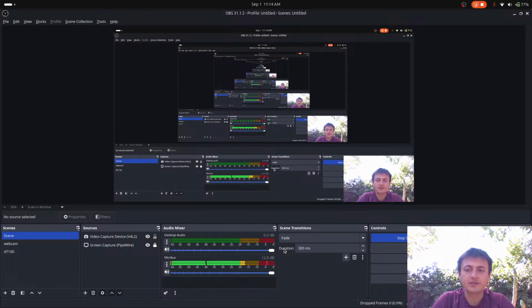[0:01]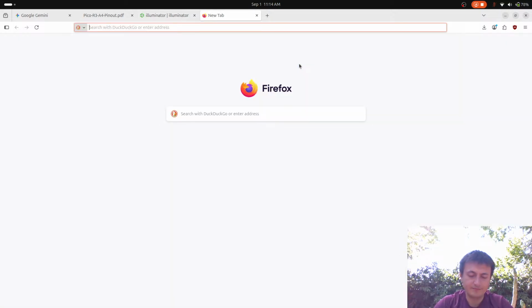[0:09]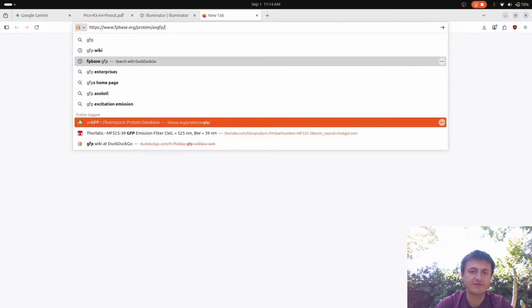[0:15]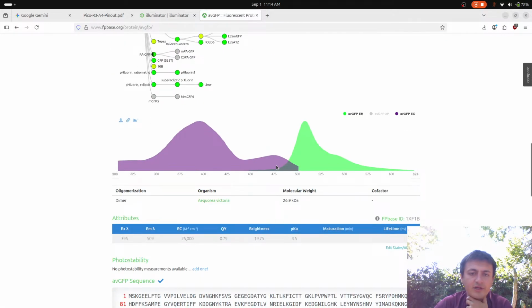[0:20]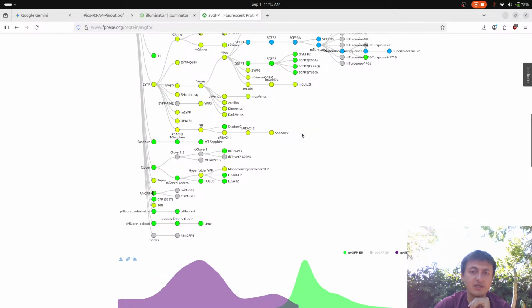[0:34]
All right, good morning. So, we are continuing on with the project of building a device that will cause, basically, to start from the beginning, there is a protein called GFP, specifically AVGFP. Now, this protein has the interesting property that if you shine a light in this band, this wavelength, it will fluoresce in this spectra. And so this is really cool, and you can basically put the gene for this protein into a plasmid, and you can put that plasmid into a cell, and it will start producing the protein.
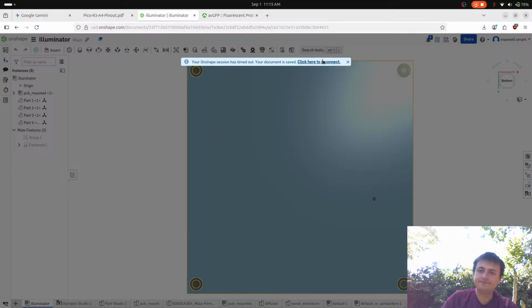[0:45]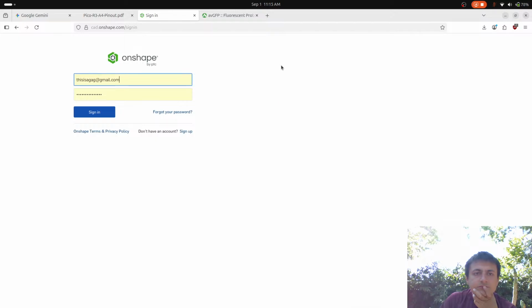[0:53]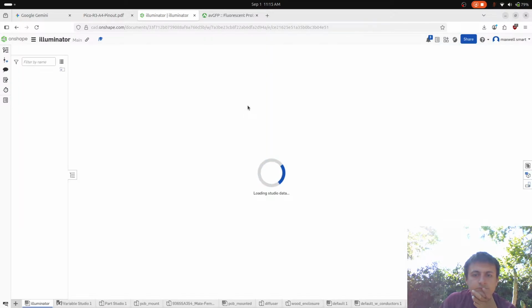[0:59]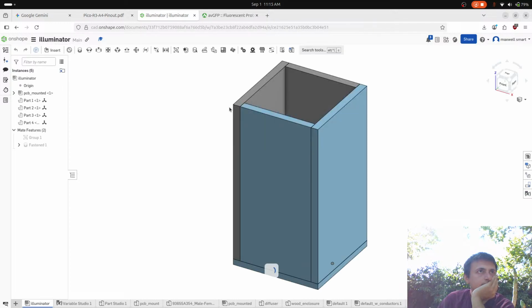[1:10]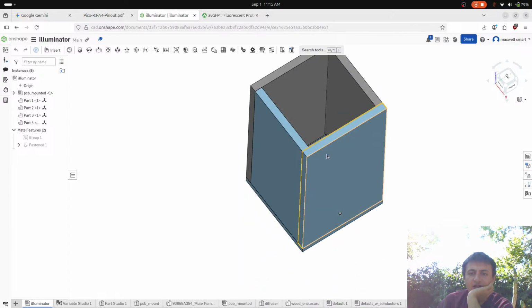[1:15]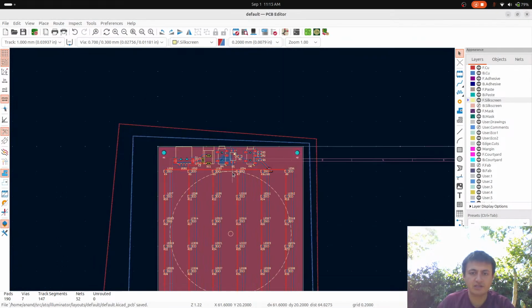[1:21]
Now, the goal of this project, and here's the CAD, and we're going to have to make some modifications to the CAD. And we're going to have to design a new part anyways. Okay, so it looks like just a box. But in here is a printed circuit board, and we designed this printed circuit board from scratch.
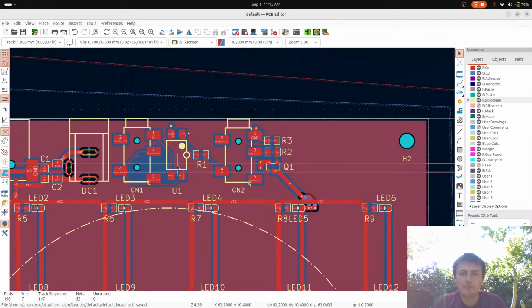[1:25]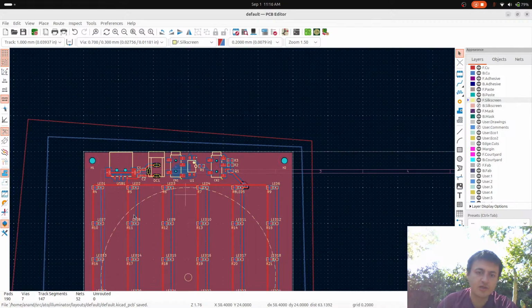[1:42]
And basically, it's a grid of LEDs, an optocoupler, and a MOSFET. The optocoupler is for controlling basically a port on the camera that lets you take pictures with a button. And instead of a button, we were just using an optocoupler and a Raspberry Pi Pico. And we have a MOSFET to turn on the LEDs.
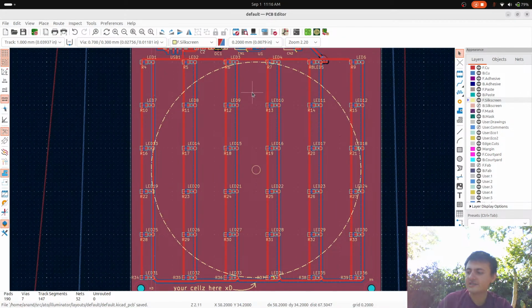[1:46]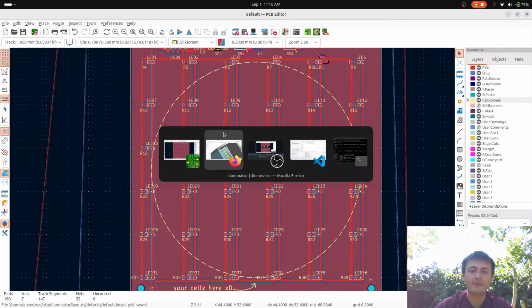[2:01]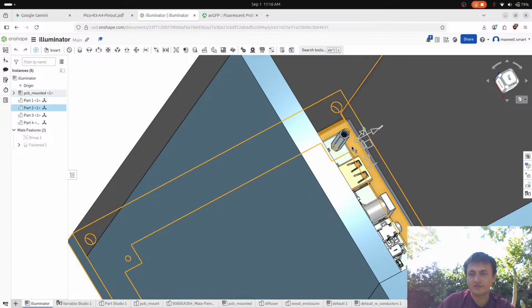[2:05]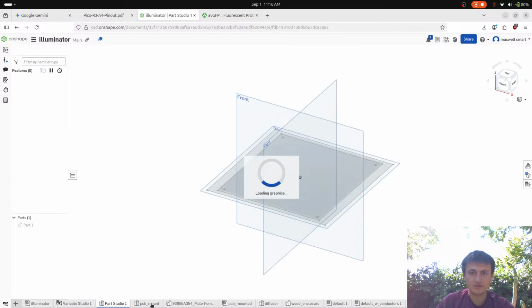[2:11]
And the nice thing about this is that if in the event we end up engineering cells with a different color protein, we can just use another color, and this should work all the same. And so in here, I don't know if you can really see this. We're gonna have to change the appearance here, but let's rename that. So this is going to be renamed
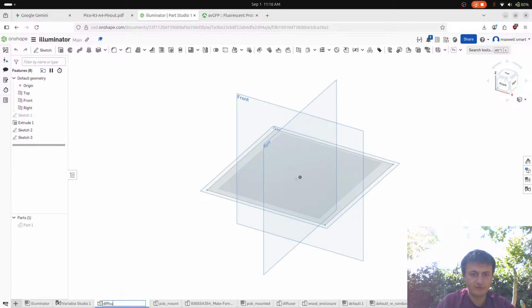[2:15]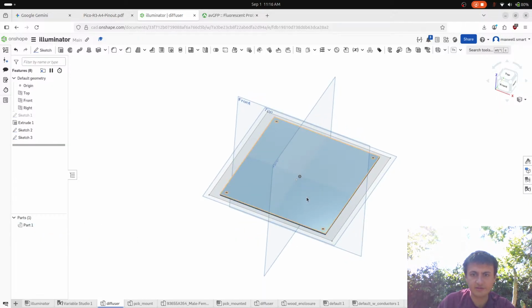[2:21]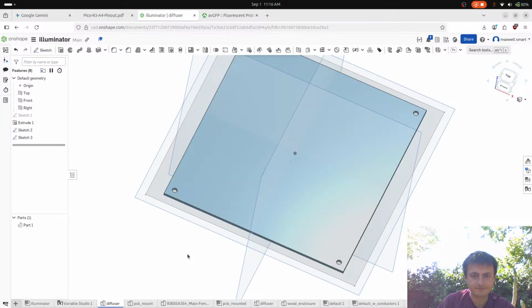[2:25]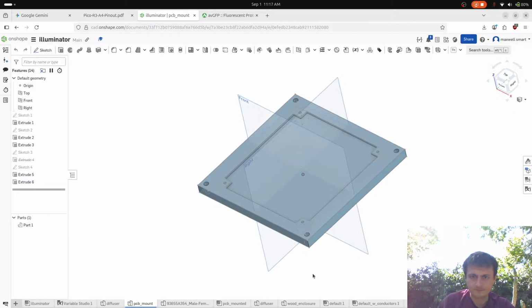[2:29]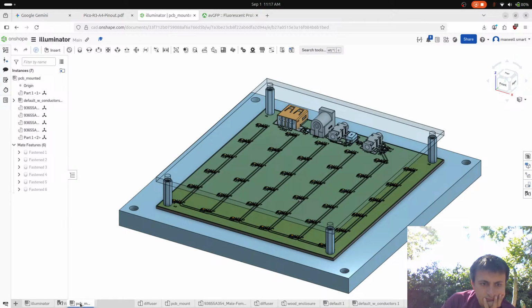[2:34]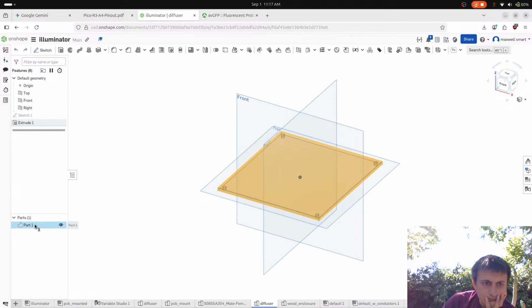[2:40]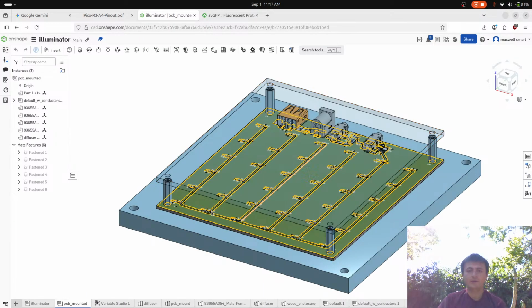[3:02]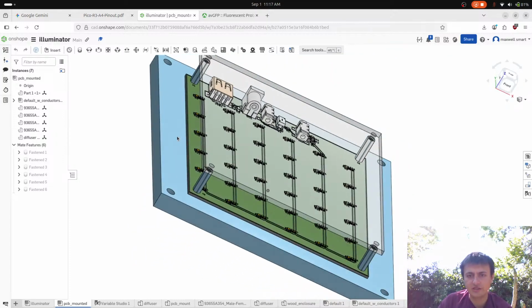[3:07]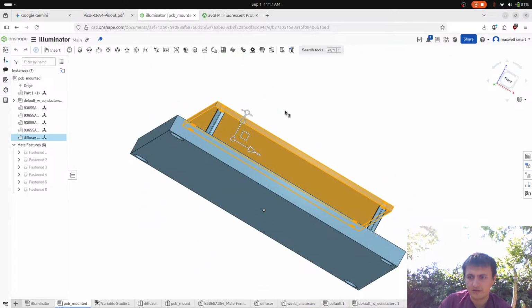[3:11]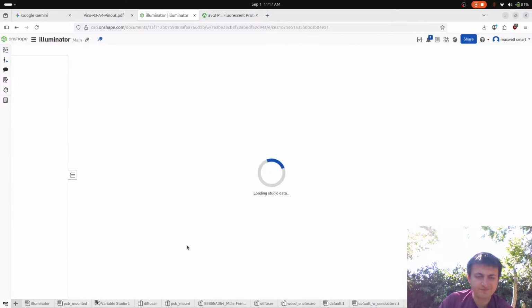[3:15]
diffuser. And I don't know, is this hidden? Wait, is this? I think this might be. Is this the diffuser? And let's okay, should update. All right. So the idea is that we're going to diffuse the light, and I have this, and this is 3mm thick acrylic on top of this, and then we have this thing.
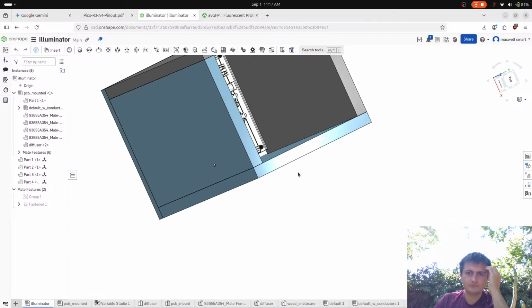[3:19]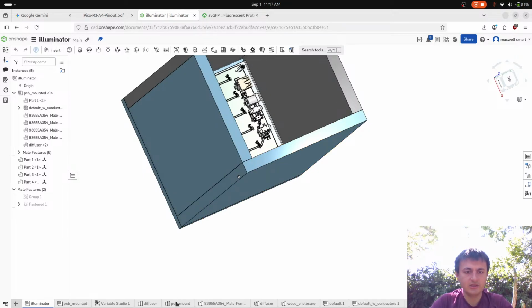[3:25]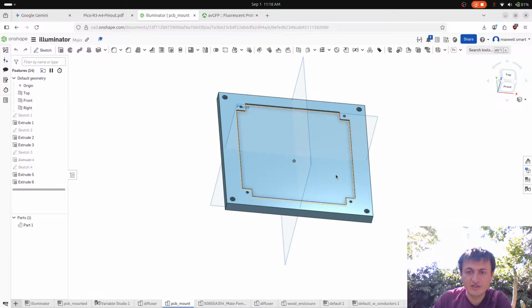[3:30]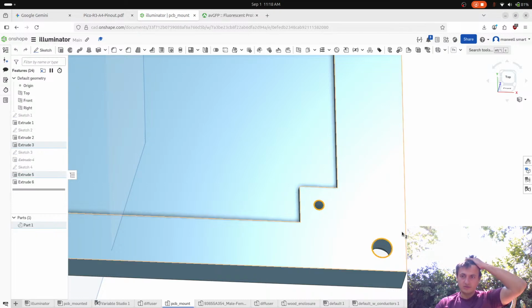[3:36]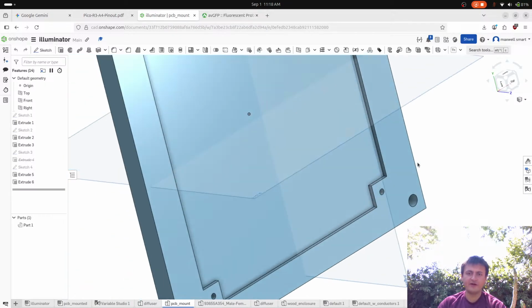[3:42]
And so I think what I'm going to do is go look at we're going to look at this, and we're probably just going to start the print of this. I just want to fix some stuff here. So we're going to use, so the 5.3 is okay, because we're going to use M5 there.
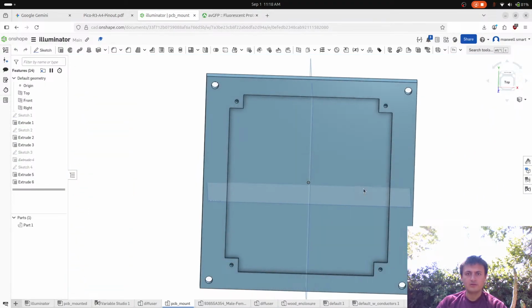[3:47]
Who are you talking to? Talking to my many fans.
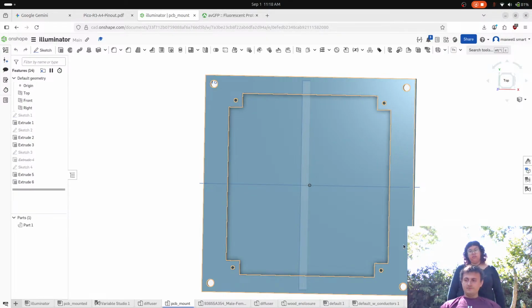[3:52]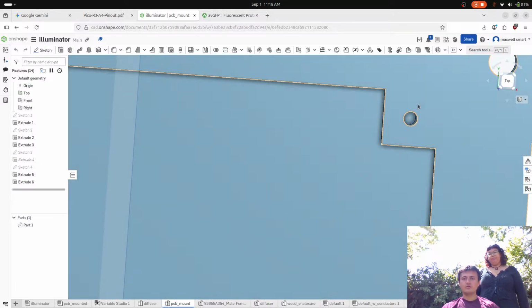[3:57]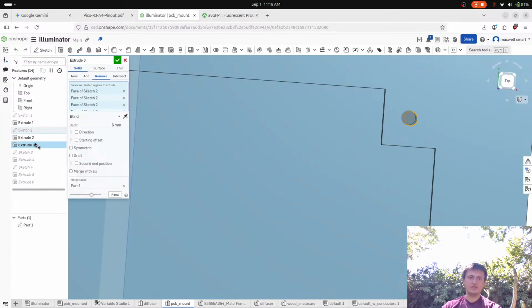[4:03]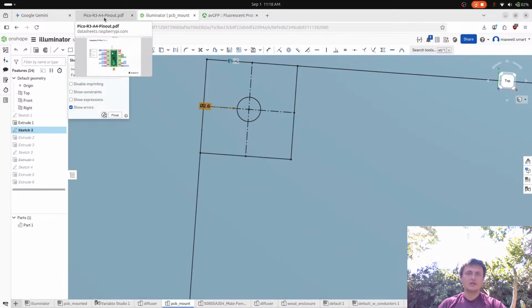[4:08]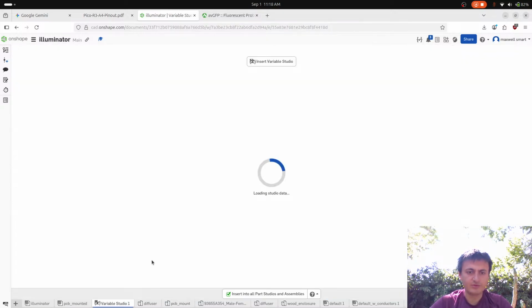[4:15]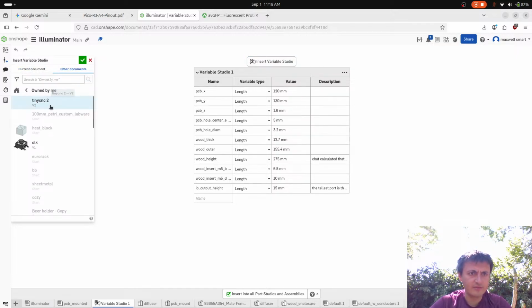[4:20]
So instead of tapping these holes, I think we're going to do threaded inserts. So what we need to do is then go here, look at this extrude, and then look at the sketch. And I think we can just change this to, and what we need to do actually is go to the variable studio, insert variable studio, other documents owned by me, and then I think, yeah, I have a params thing, which is like my standard library of parameters.
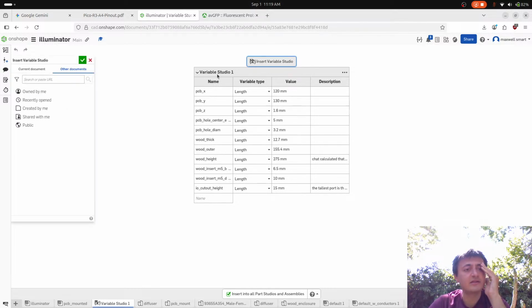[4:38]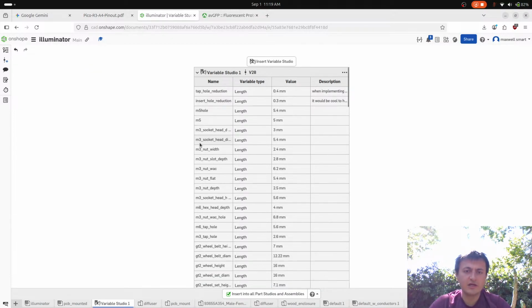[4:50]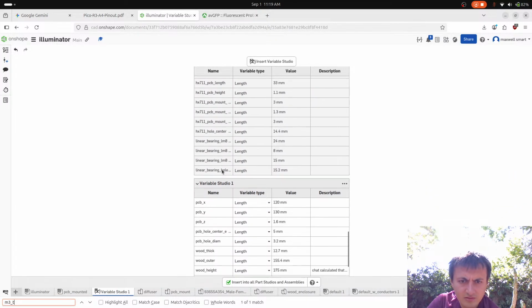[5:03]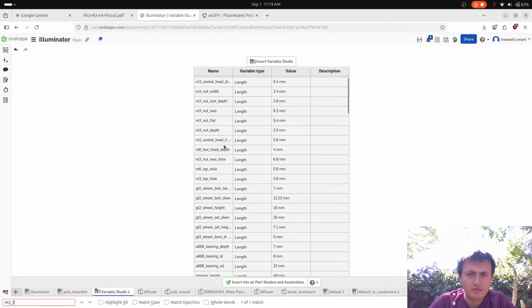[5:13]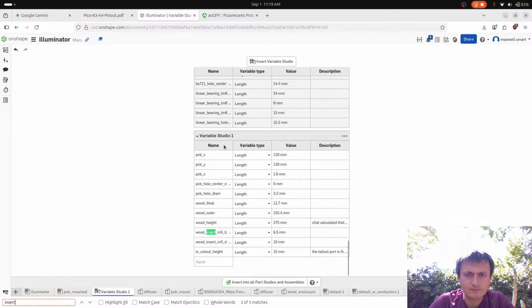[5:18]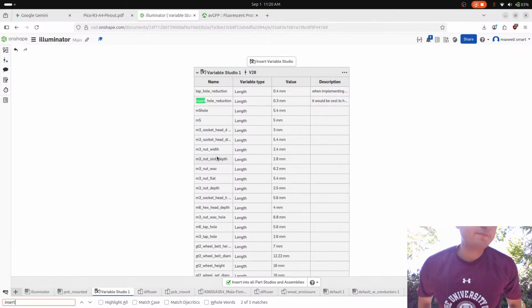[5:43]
And the performance of this is like so crap. Like, did that even work? There we go. Okay, so now what we want is M3 threaded tap hole. M3 hole. Oh wait, what is that? Insert hole reduction. Okay, let me just go get the part and the calipers then.
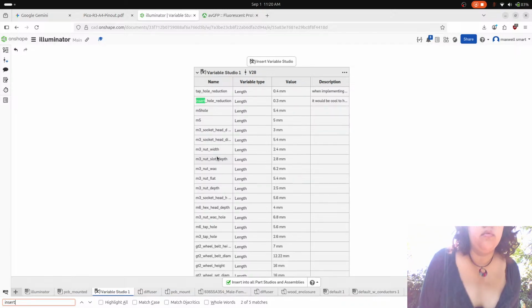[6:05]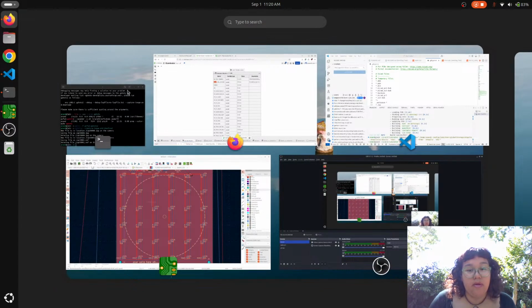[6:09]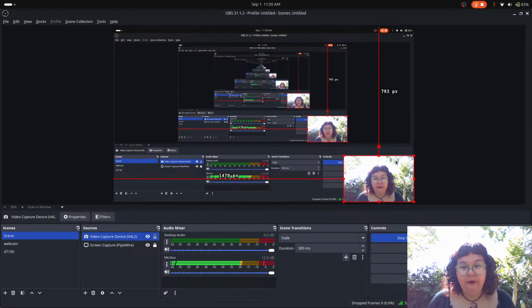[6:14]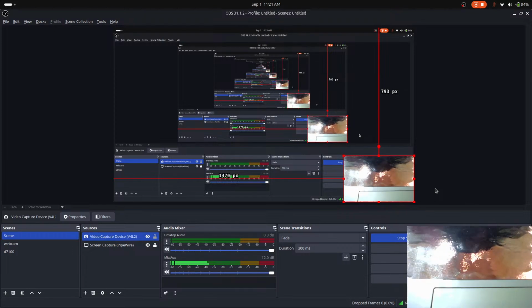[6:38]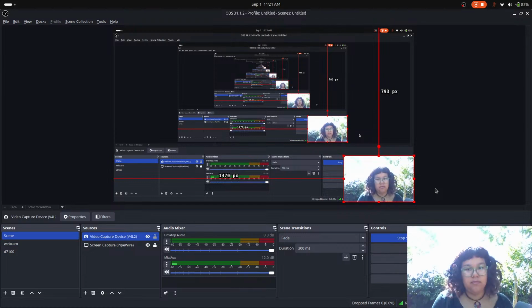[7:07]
Oh, I have noise reduction on. That wind is not going to pick up. Oh. Hello, mama. I need to get my coffee too. I'm going to get the wood.
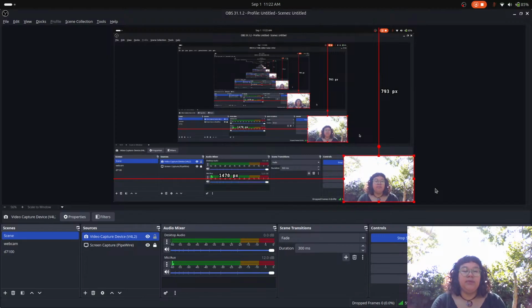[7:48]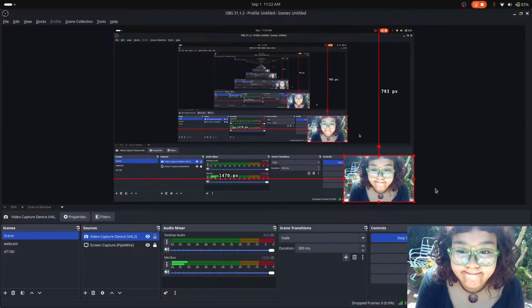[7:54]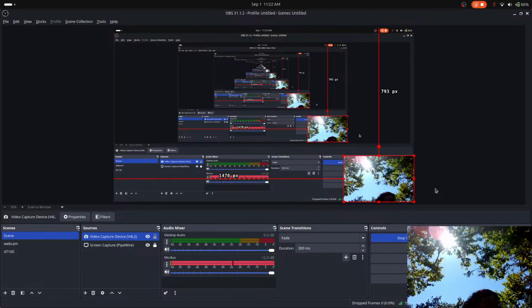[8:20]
Hey, guys. Yeah, did you drop the pot? It was likely an animal. I heard something last night while I was using the toilet, and I got scared, and I was looking out the windows, and I didn't see anyone. So maybe that's what that was. But I definitely heard a sound in your backyard, and it sounded like someone was back here, and I got scared.
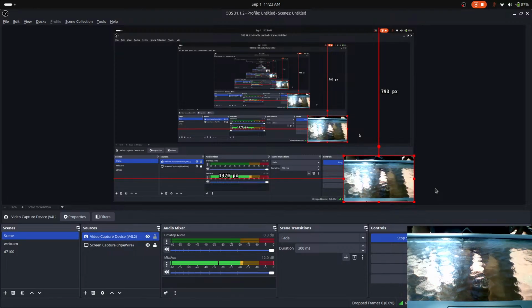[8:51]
So la di da. Oppa! Oni-chan.
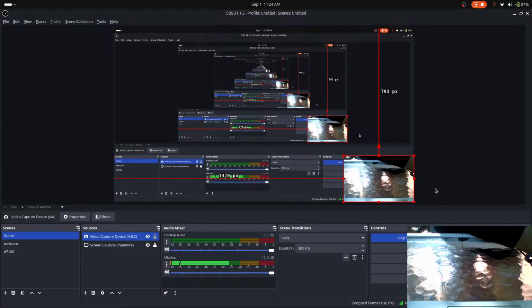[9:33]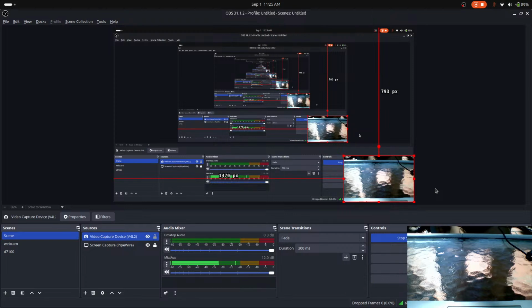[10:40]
So, right, so I'm gonna do one thing in CAD. You can sit next to me. Do you want to do it? Actually, I can show you how to do it.
What? Well, it was an accident, is what I mean. Did you do that too? This red Coca cup. Yeah.
No, I put the cup over. I think I did kick the cup over, but it was empty. But you just left the glass cup down there? Yeah. And you haven't picked it up? No. But that's not your glass cup.
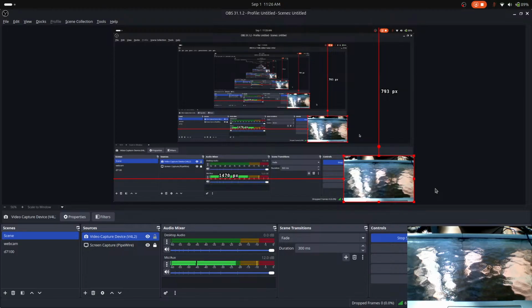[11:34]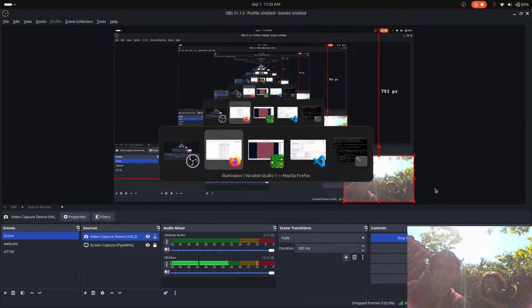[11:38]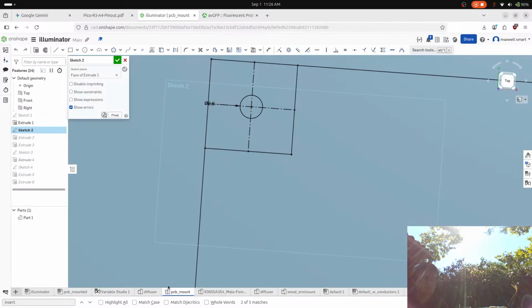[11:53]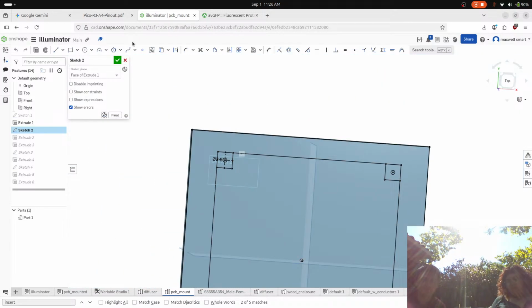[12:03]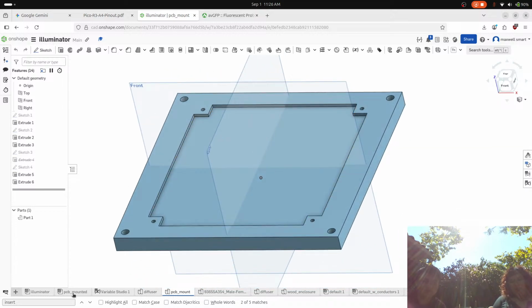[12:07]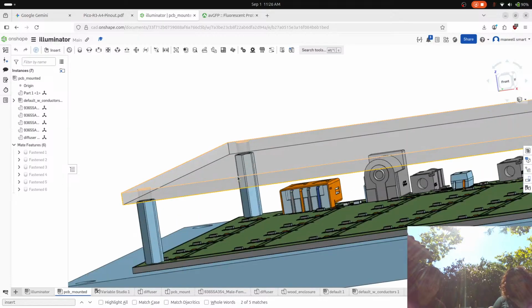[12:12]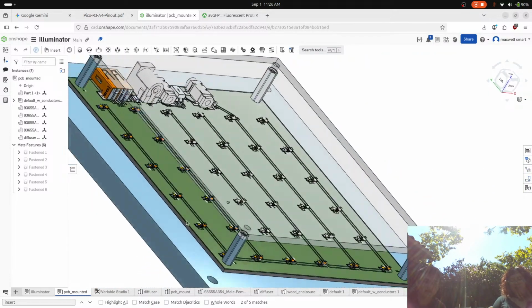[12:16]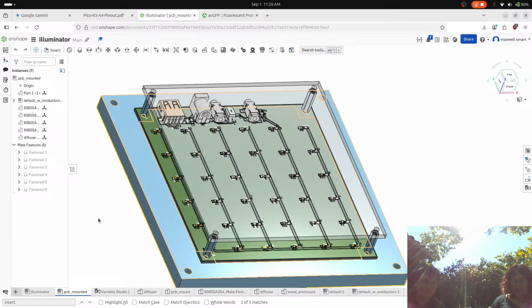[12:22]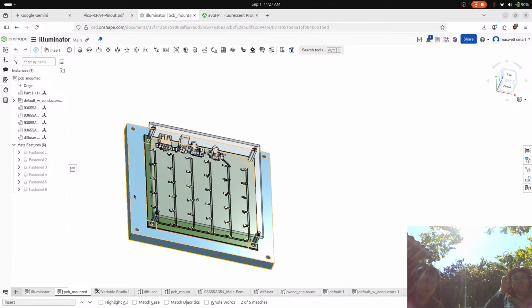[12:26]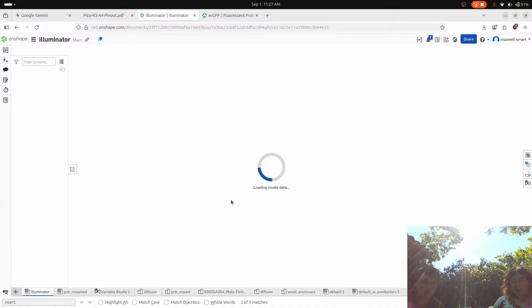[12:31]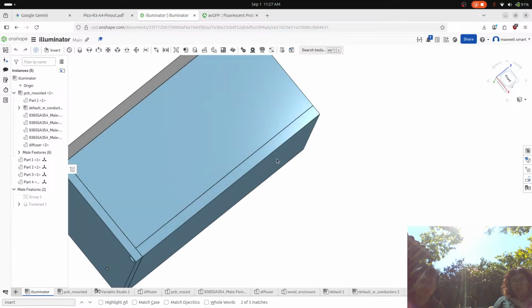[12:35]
All right, let's do this. Okay, so we're basically just gonna get this thing ready for being printed. So we have this part, and the part sits on the assembly like this. We have a diffuser that diffuses the light, the PCB, and then the thing that holds it. And this is a 3D printed part, and the wood is gonna connect to it like so.
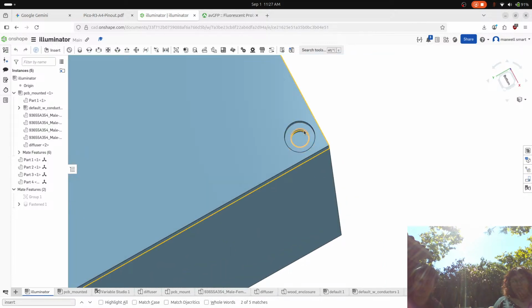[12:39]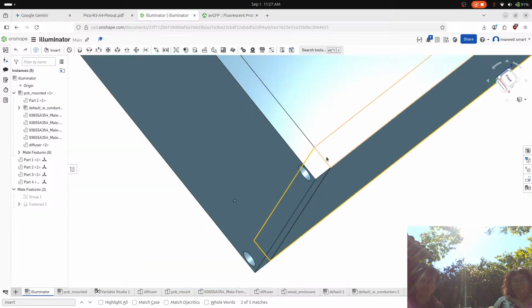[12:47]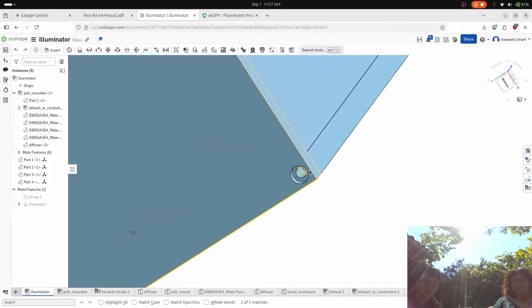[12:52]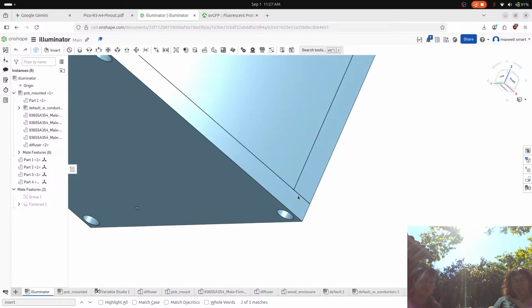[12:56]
So what we're gonna have is, I can go get the parts, but there are wood versions of them, and so we're gonna put the wood versions into this wood, and then we're gonna bolt it from the bottom with some M5 bolts. Now, ideally, we could use rubber pads to prevent it from sliding, but I don't have those, and I think that's more of a future thing.
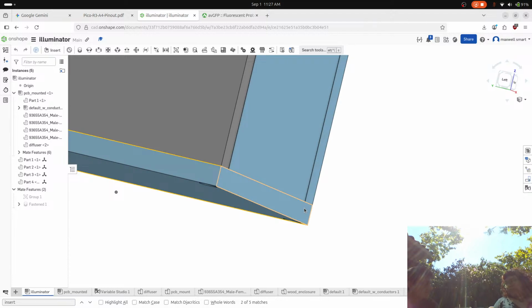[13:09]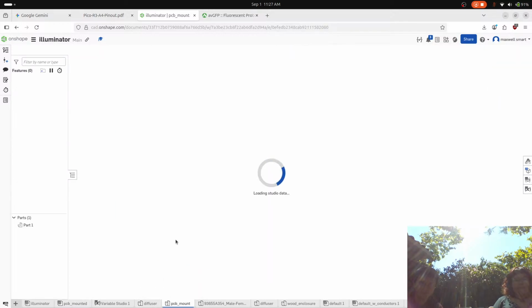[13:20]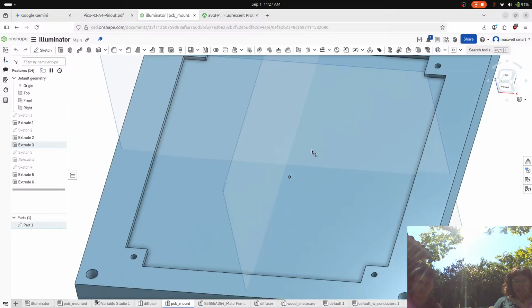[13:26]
Okay, so the question is we basically need to check if this part is ready to be printed, and I want to make a change. I want you to change the size of these holes so that they're gonna fit these M3. I thought we were doing M5. Not for the PCB. So there's two sets of holes, right? Missing some. That's not good.
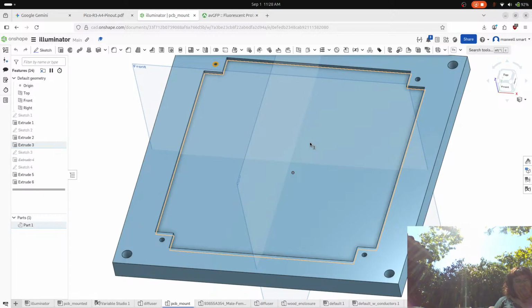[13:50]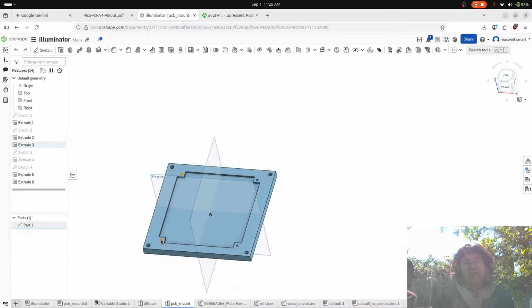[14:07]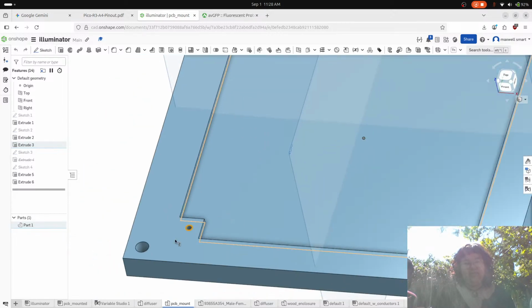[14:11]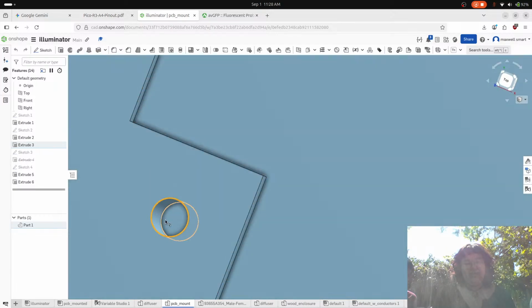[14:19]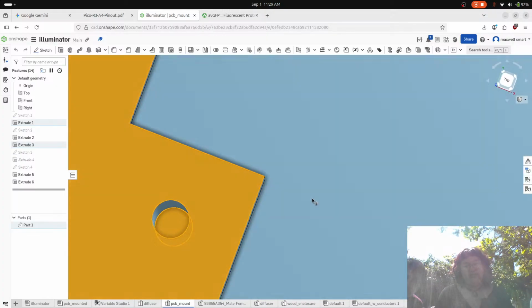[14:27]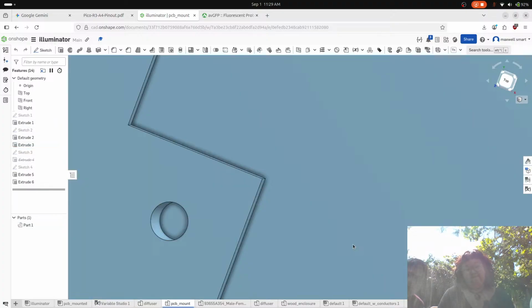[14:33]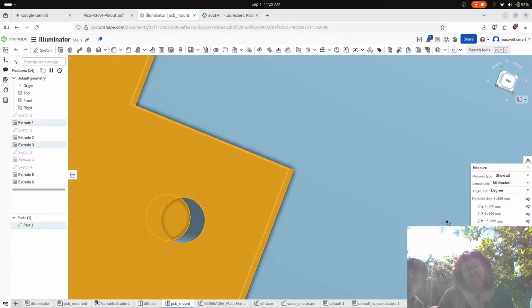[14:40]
But anyways, can you figure out the depth of that hole? What I do is, if you select two faces that are parallel, it'll tell you. How do I get to the other side? Well, it's not even on the other side. You have to select this face. It's not a through hole? No, it's not a through hole. And it didn't even tell you the parallel distance, which is odd. That's weird. But there we go, 6. So we can make it deeper if we want.
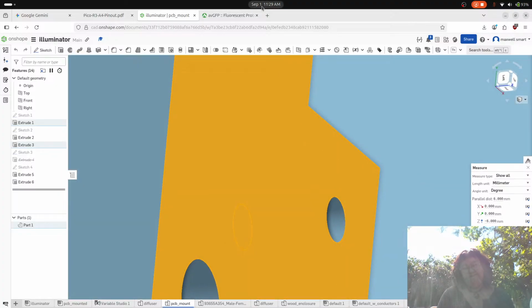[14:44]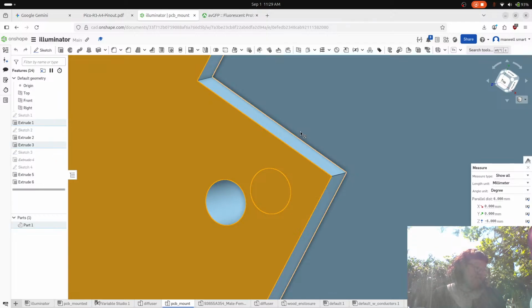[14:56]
So, diameter by height by outer diameter. So we want these. Okay, so what we want is that the outer diameter of this part is, where my calipers at? Because if the outer diameter is truly 5, then we want to make it less than that, like 4.6 or something, right? Because it needs to melt into these grooves. Okay, so presumably this is 5. It's like 4.8. So let's do 4.5. So change those holes to 4.5.
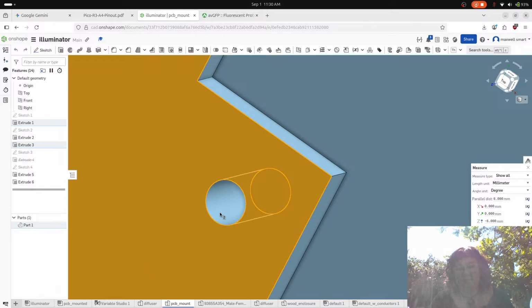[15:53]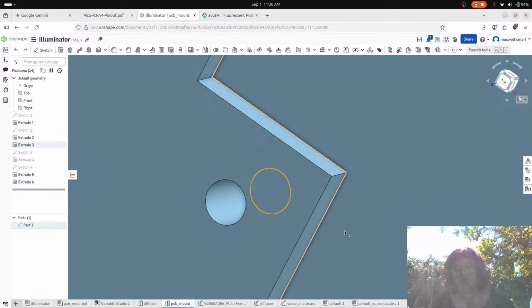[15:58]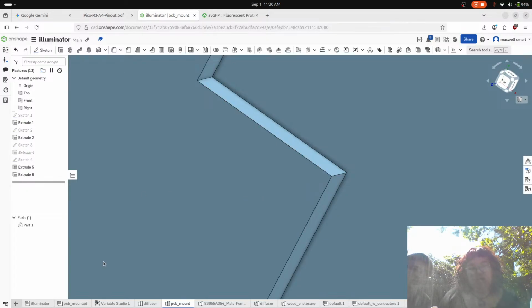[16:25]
How do I just select? I'm changing the diameter. That doesn't look right. 2.6. Yeah, it could be, because I was originally planning to tap the holes, in which case it needs to be smaller than the diameter. Yeah, so that doesn't work. You have to go to the feature tree. Remember how this all works? Oh, I got rid of it. That's not undo. Yeah, don't do that.
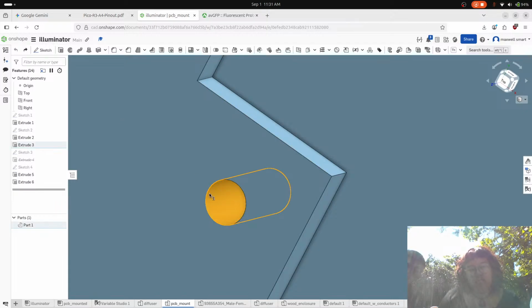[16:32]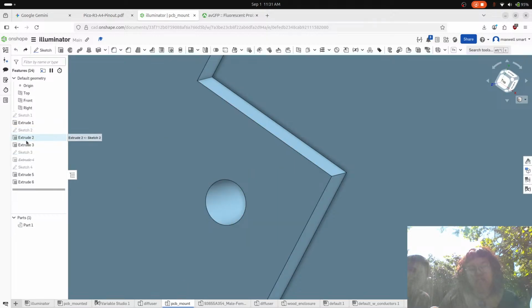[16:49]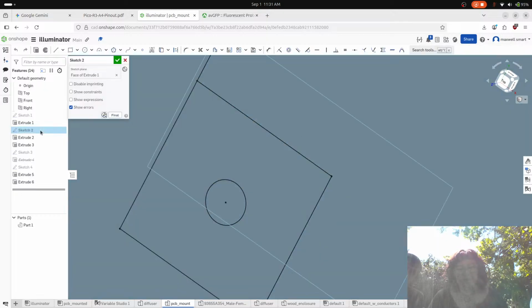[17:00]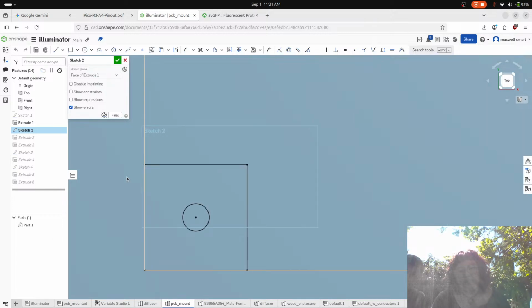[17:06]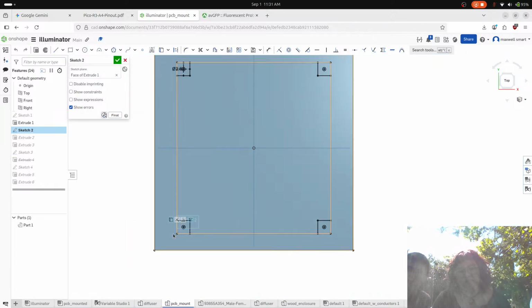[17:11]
So when you select it, you can see what change that came from. But that extrude isn't what you're looking for, right? You're looking for the sketch that underlies the extrude. So if you hover over sketch 2, see how it's highlighting the feature? Double click it and you'll enter it. Now you can zoom out. Just keep zooming. Because there's 4 and they're mirrored, that's the one you want to hover in on. That's the driving one. So zoom into that.
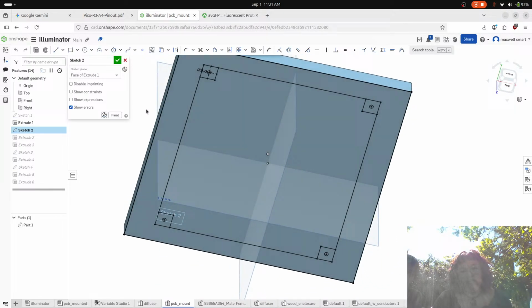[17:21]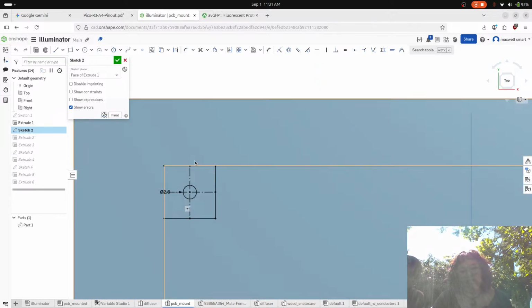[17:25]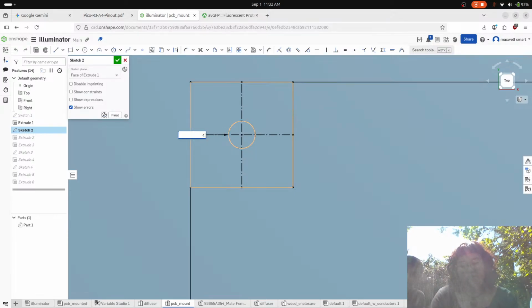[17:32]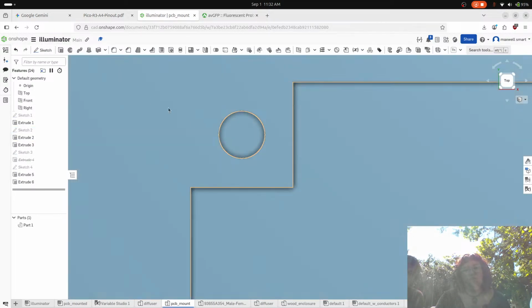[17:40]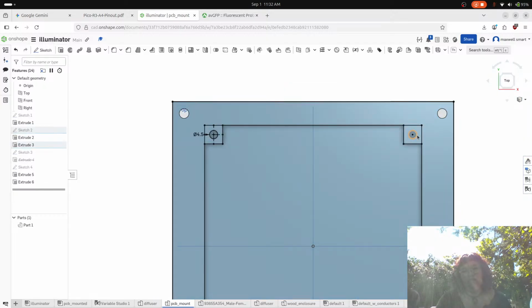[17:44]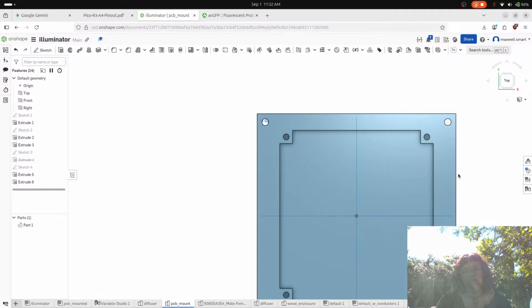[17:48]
Remember, middle mouse button is to pan. Okay, so see that 2.6? If you double click on the number, you can change it. Okay, now confirm the sketch, and check that all of the holes have been changed to the right size. Okay, cool. So I think we're ready to print this thing.
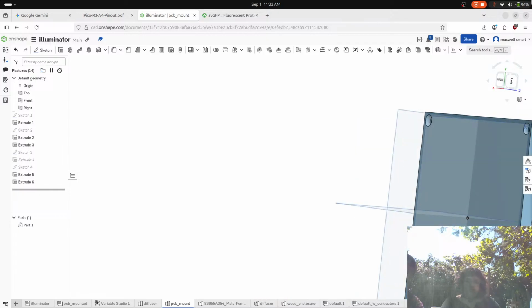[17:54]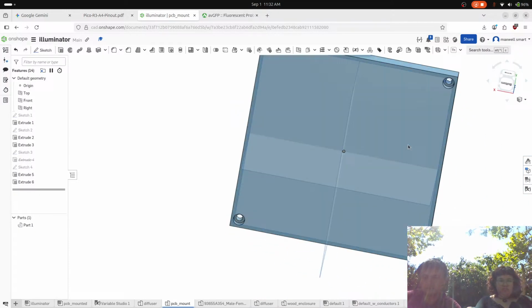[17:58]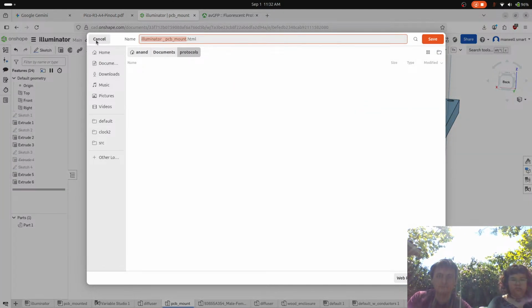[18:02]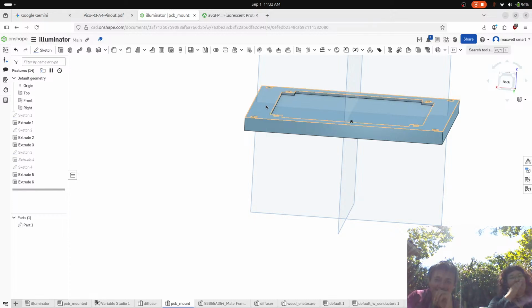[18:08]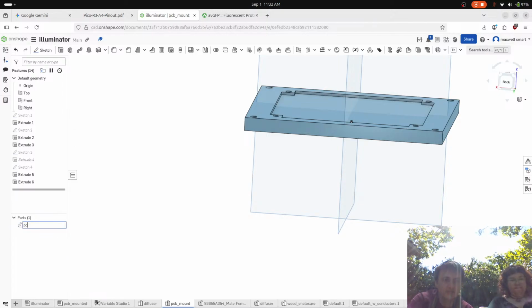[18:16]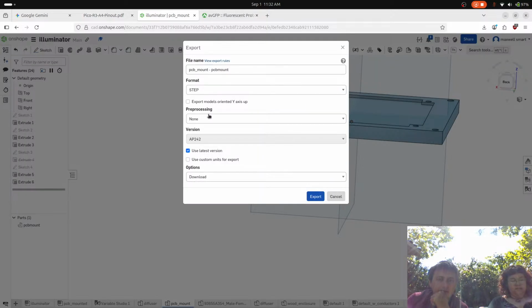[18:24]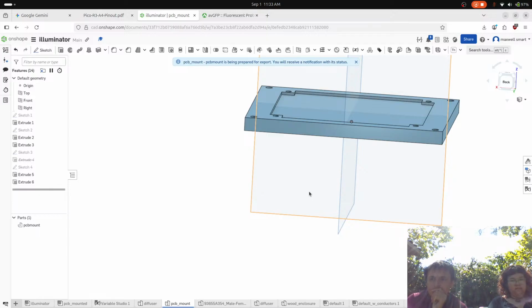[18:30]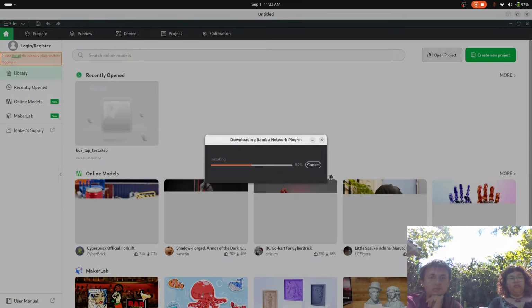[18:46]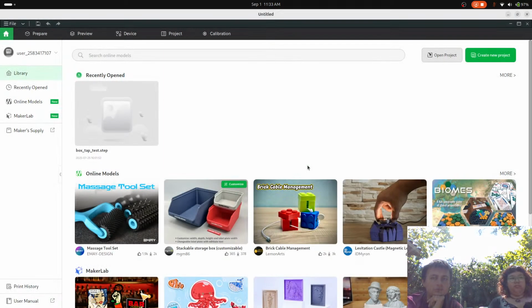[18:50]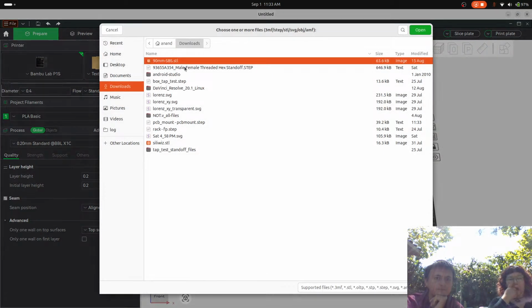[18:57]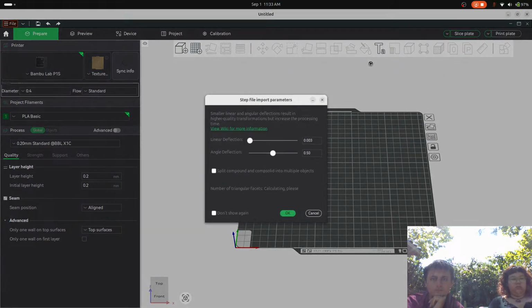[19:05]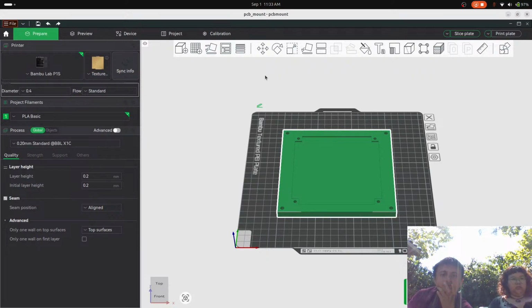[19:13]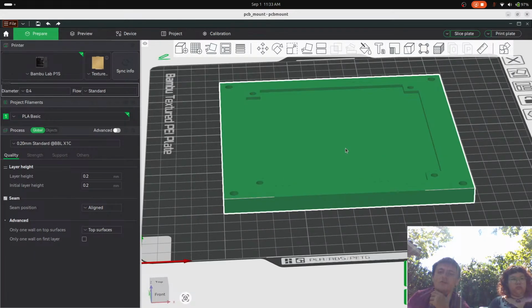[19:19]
This is the PCB mount. Okay, and then I have to go in and look at what colors I have, because ideally I have black. Okay, this is a really easy part to print. So come with me.
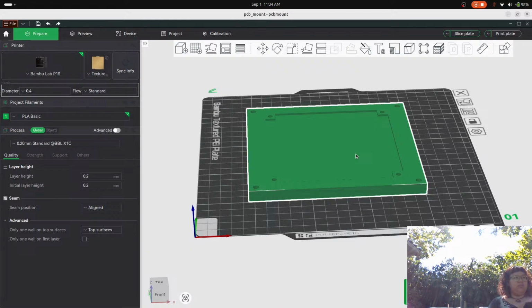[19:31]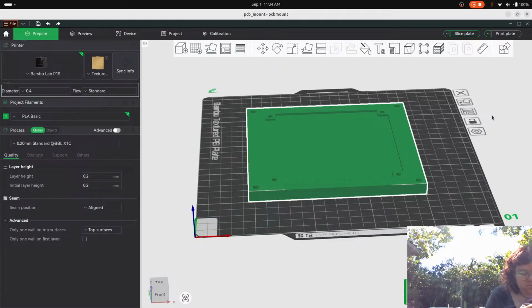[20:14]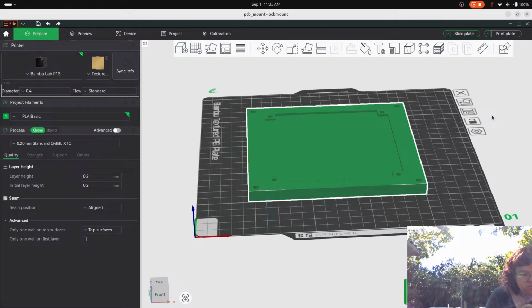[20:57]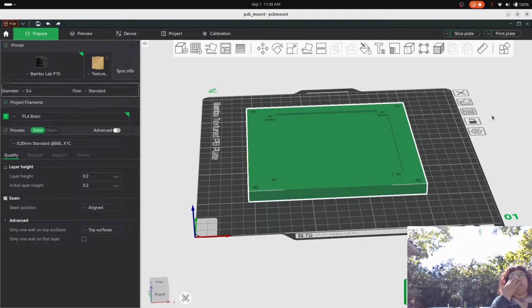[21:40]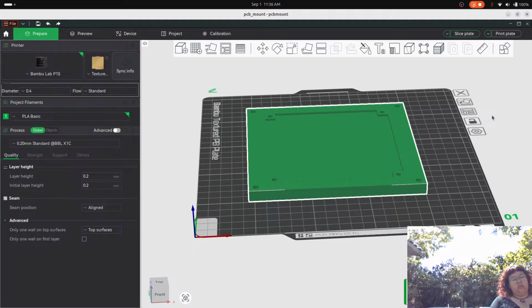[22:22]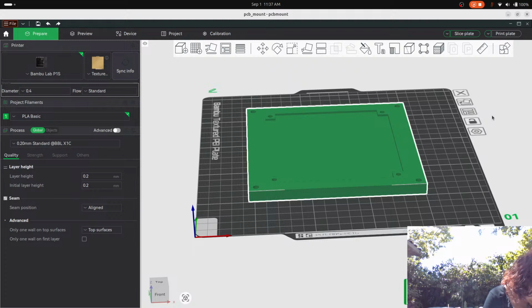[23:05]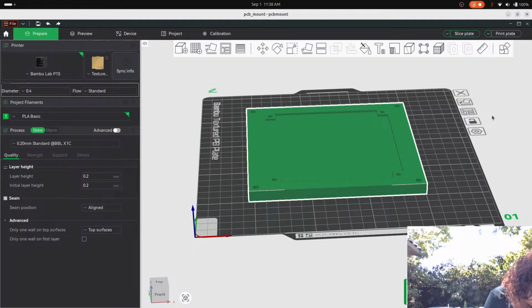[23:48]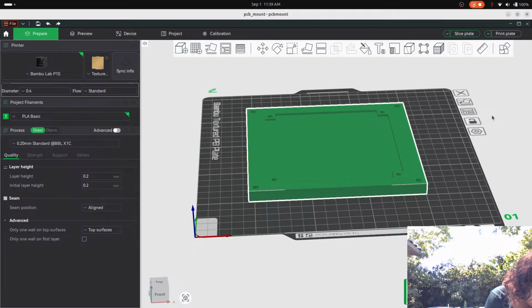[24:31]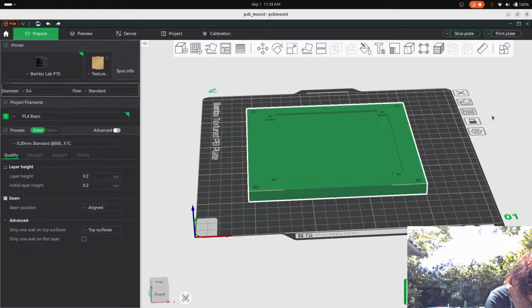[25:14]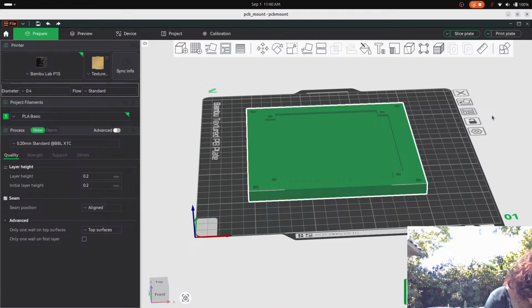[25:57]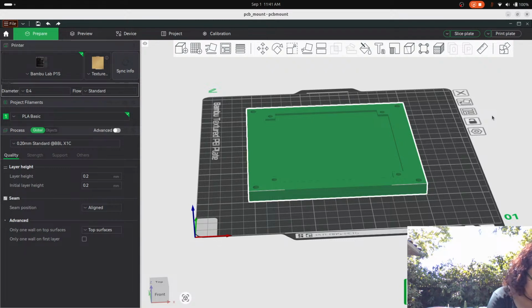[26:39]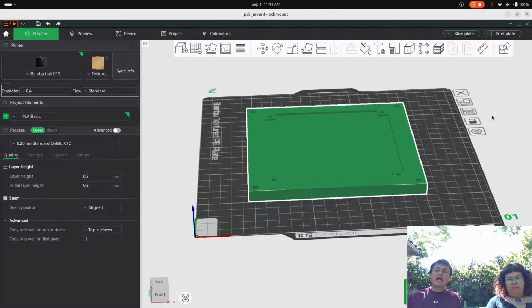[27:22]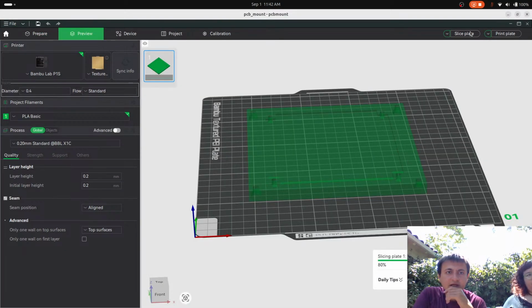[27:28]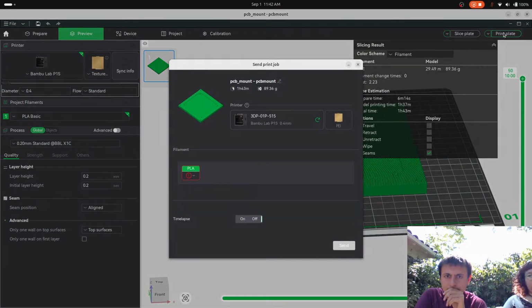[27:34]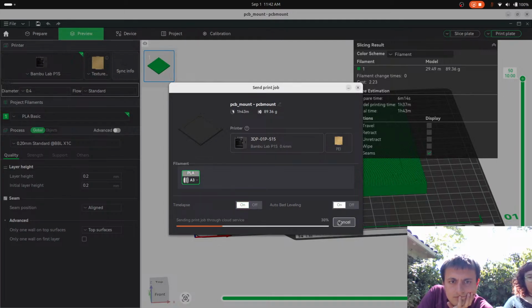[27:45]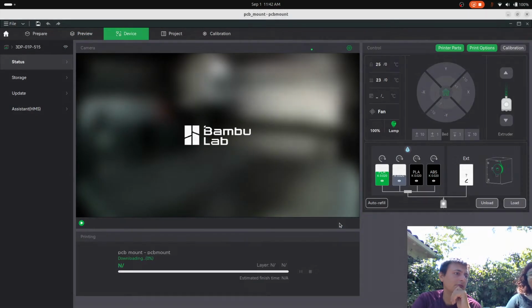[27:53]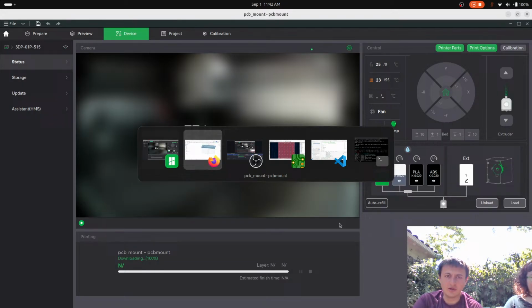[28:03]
Okay, so I put some black filament in here. And that's important because we need to absorb as much light as possible. Why is that important? Because once you go black, you never go back. What are you doing? It's a family-friendly channel. No, it's because we need to absorb as much light as possible. All right.
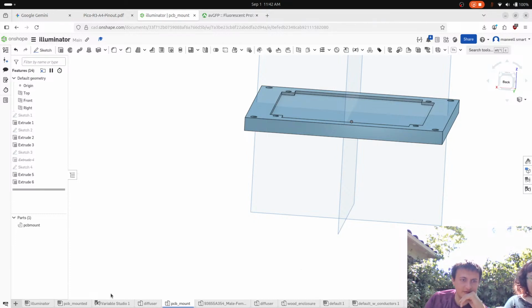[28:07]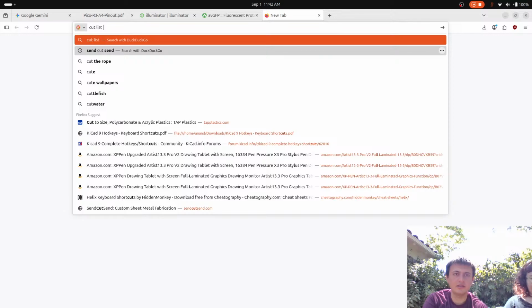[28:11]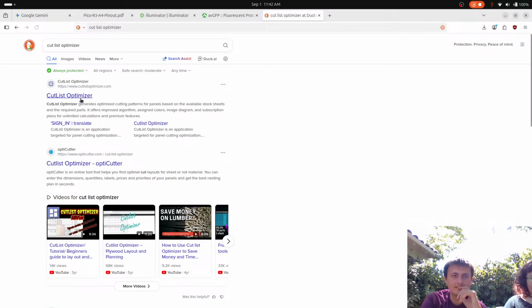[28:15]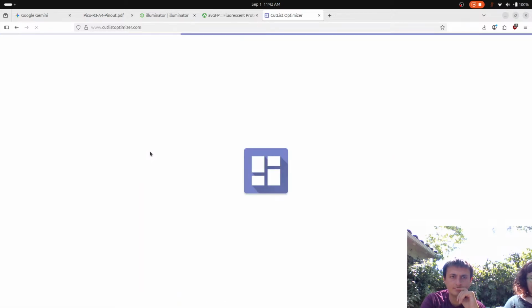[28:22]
So now we can get to cut list optimizer. Oh, I forgot the circular saw.
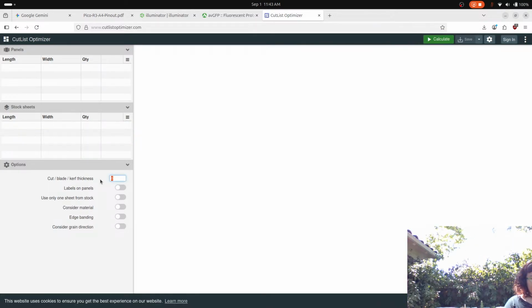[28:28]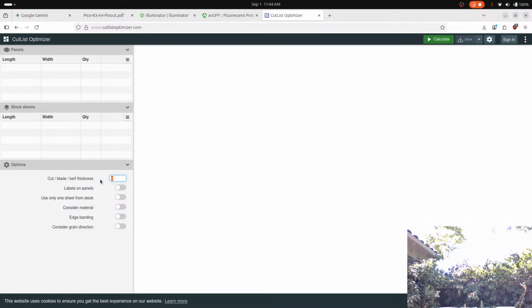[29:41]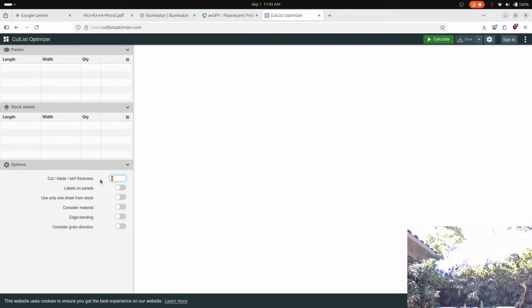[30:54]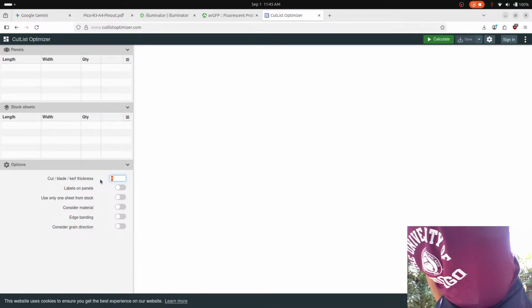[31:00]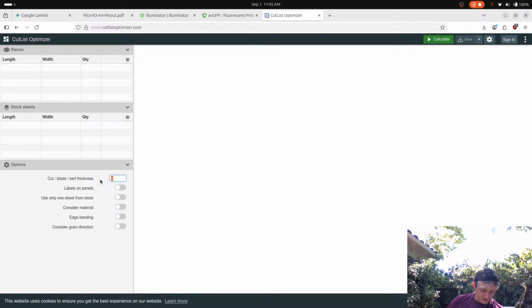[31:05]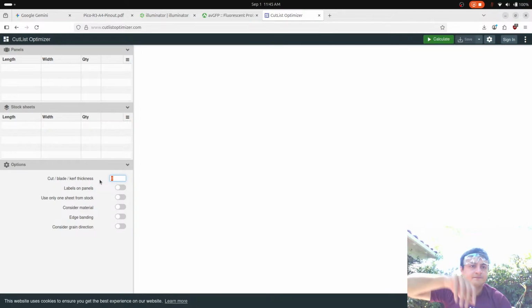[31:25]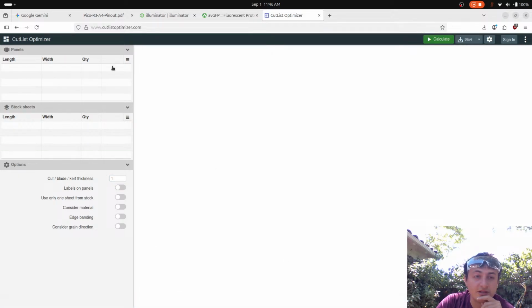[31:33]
Setup is always the thing. So I need the calipers and the blade. Usually it probably says on here what the blade kerf is, but we're just going to measure it. It's 1 millimeter. That's a pretty thin kerf. Okay, 1 millimeter. Probably doesn't have units, does it? It's probably all in inches.
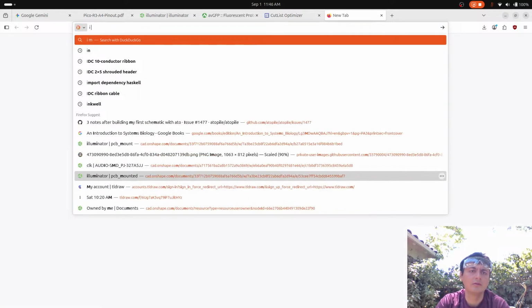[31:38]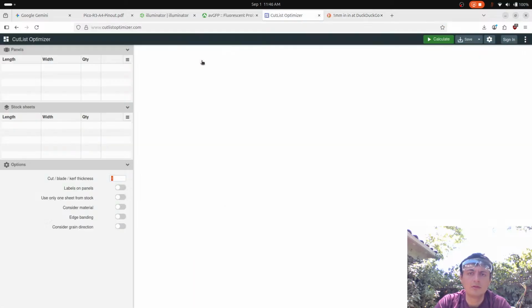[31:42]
Panels. How do I add a panel? Oh, I just do this. Okay, we have two. I think 24, 48, 1. Oh wait, no, I did this wrong. 24, 48, 1. Okay. And then what do we want?
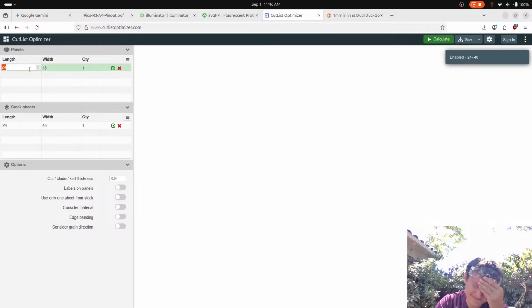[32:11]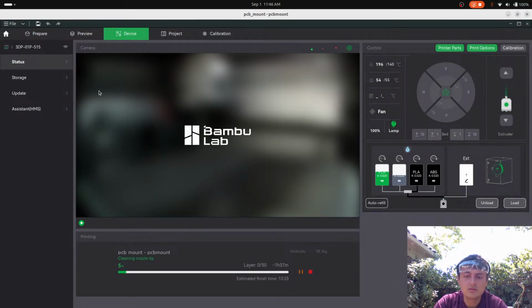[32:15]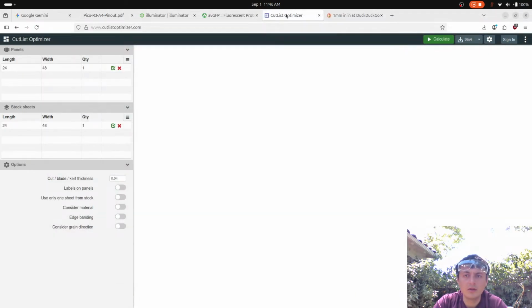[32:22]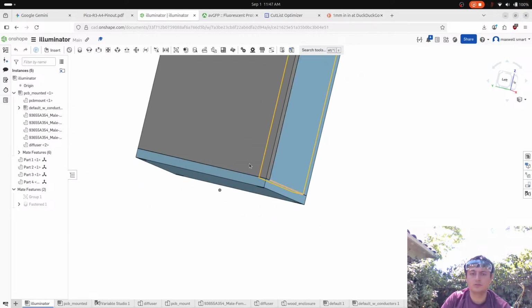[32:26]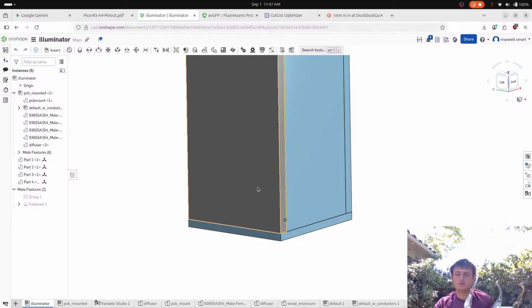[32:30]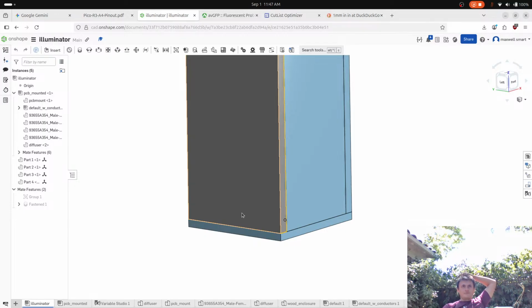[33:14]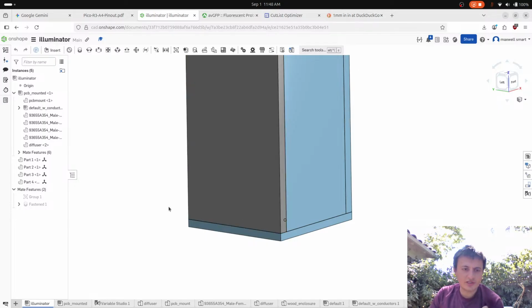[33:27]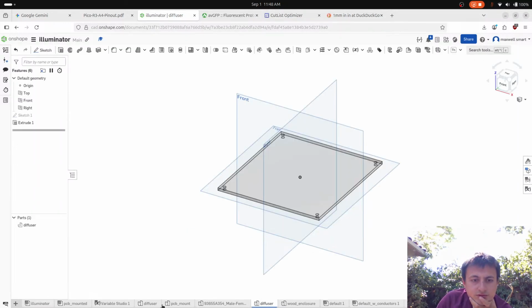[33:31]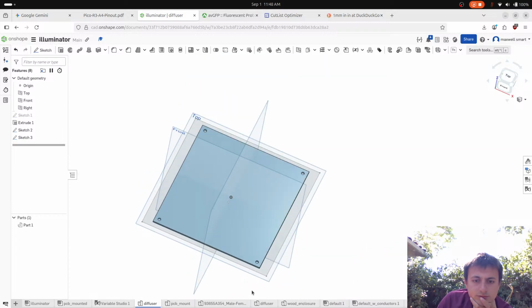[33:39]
We want, so, okay, so I think I do want to go in and, screw it, let's make it more challenging. Let's do it. So, wait, why do we have 2 diffusers? Did I really do that? That's weird.
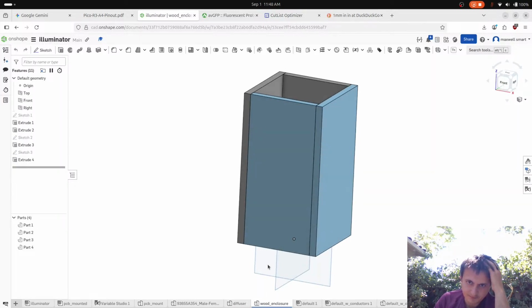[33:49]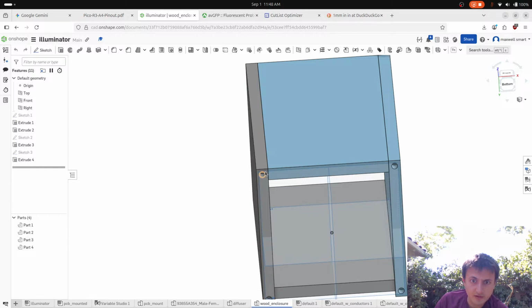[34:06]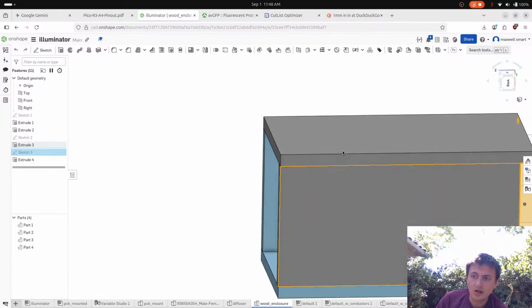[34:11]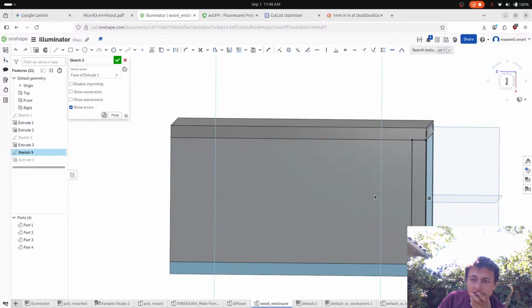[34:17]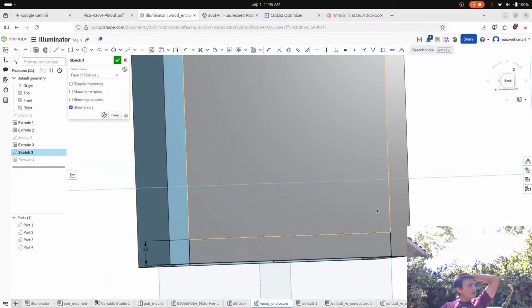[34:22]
All right, so here's what we're gonna do. Sorry, I apologize. So we need to figure out where these holes came from. What was this? Oh, this is the cutout. Ooh, interesting. How big is that cutout? 15. Okay, that's a little annoying, actually, isn't it?
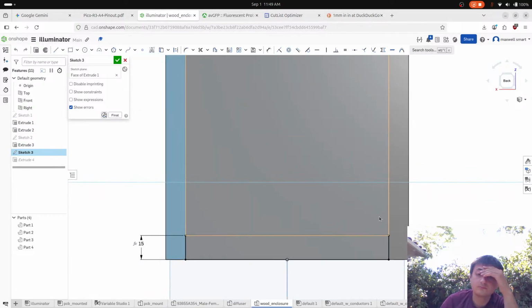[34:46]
What do you think? Do you think we should just try to drill into the side of that thing, or should we cut off a little strip, use the drill press to drill into that, and then put the wood insert in that? Let's just do a trial. Yeah, we should do a trial.
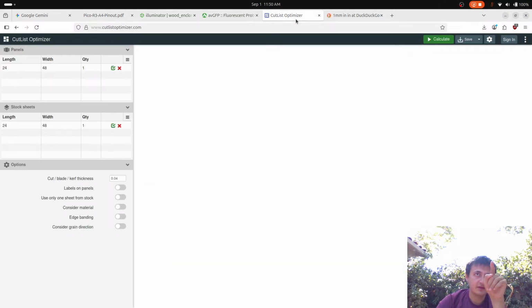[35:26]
Okay, so I'll get the tables. I'm gonna need you to help me grab a table. I'm gonna need to pull the bikes out and then get the table, because I want rigidity because I care about precision right now. So we're gonna have 2 tables, and in the middle is gonna be our cut. We're gonna run it through. What we're gonna do is cut off a 1/2 inch.
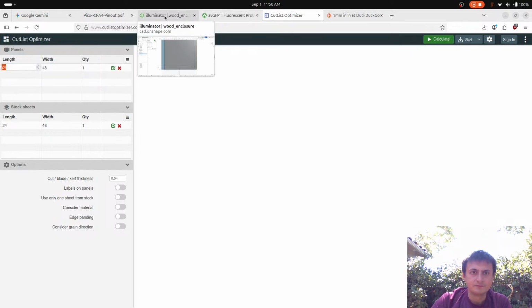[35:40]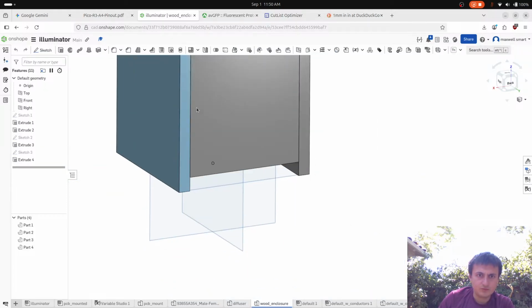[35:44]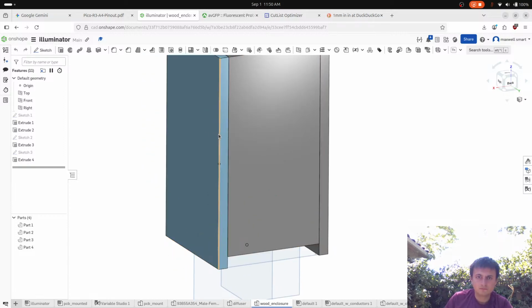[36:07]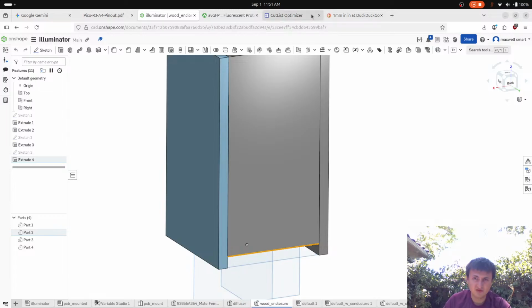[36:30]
Well, okay, let me put this into the cut list optimizer and see what we need. So we need, can I have this? Okay, yeah. So we have 275 by 155.4. And then 275 by 130. So now we just need to, and I wish this thing had units, man.
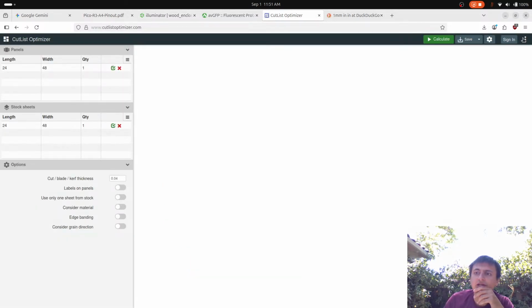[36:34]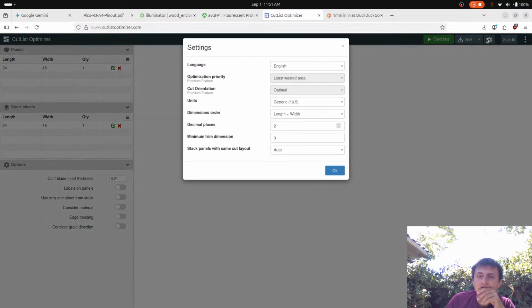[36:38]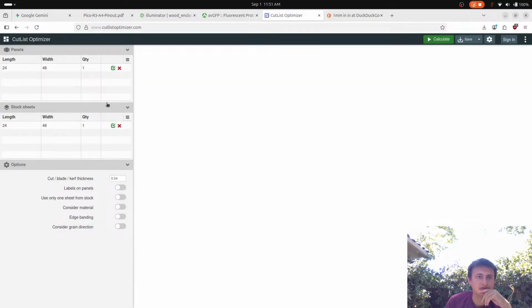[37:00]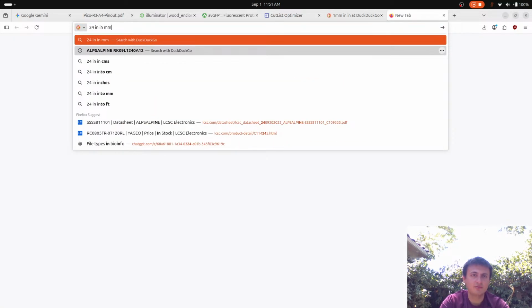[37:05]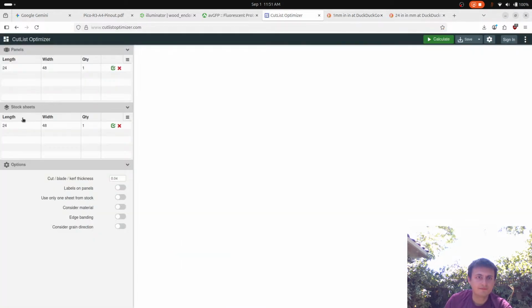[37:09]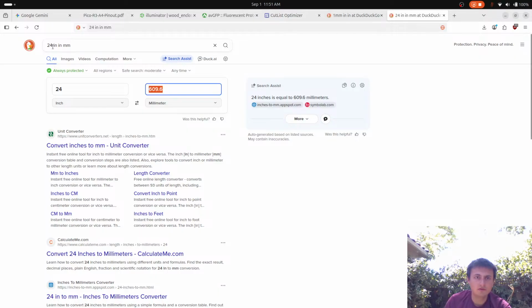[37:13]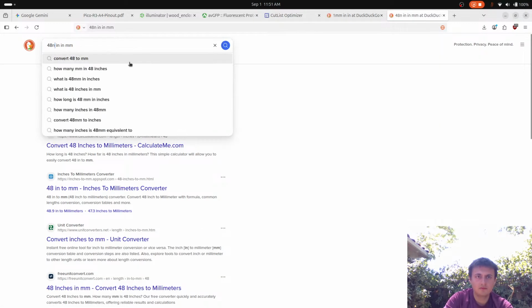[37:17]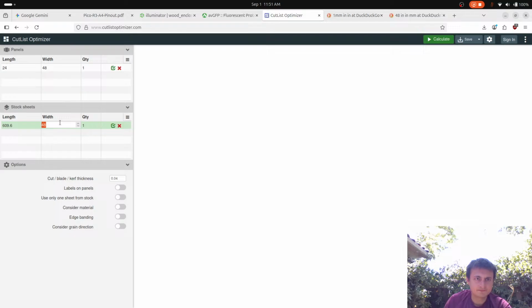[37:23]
Or wait, can I just change the units? Generic units? I guess. I wanted it in millimeters. Or, okay, whatever. Generic units, that's kind of weird. So then if we just convert 24 inches to millimeters, and that times 2. Okay, so now everything is in millimeters.
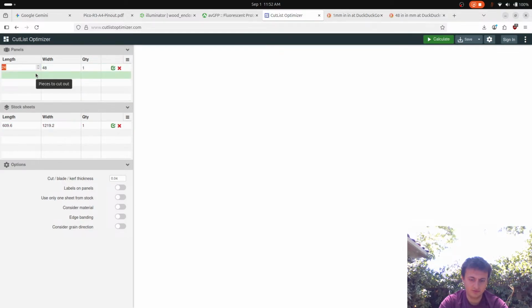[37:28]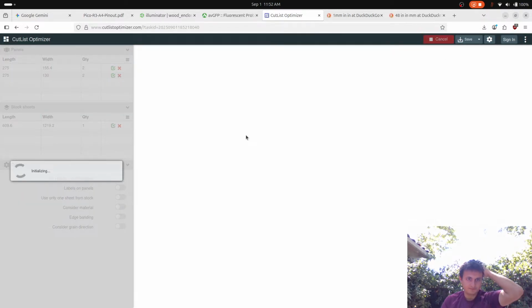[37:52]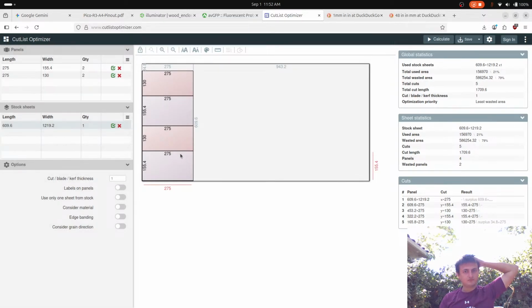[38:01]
So now what we need is 275 by 155.4, and we need 2 of those. Then we need 275 by 130, 2 of those. Okay. The kerf is now 1. Calculate. Oh yeah, we are not going to need... Okay, we have plenty of extra. That's good.
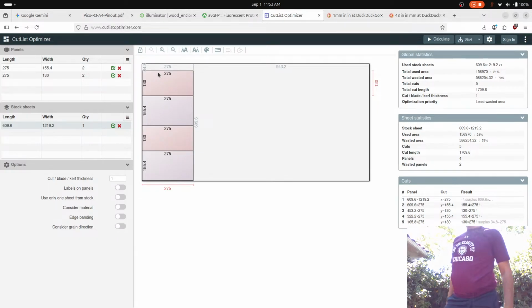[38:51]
Oh, this is perfect. And how big is that? 34? And we're going to have to learn how to change the speed on that drill press. All right, so let's get the camera set up. I think I'm just going to do it on here.
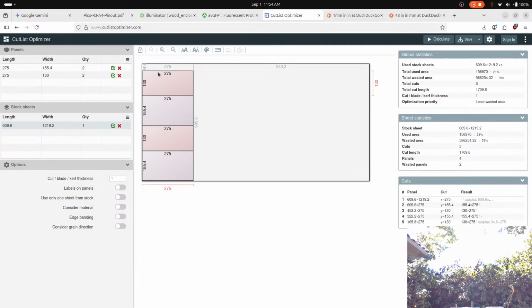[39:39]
I need to get my other shoot. That's one annoying thing about this. Okay, I need to get my other charger.
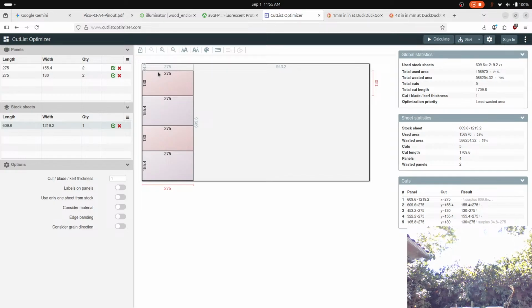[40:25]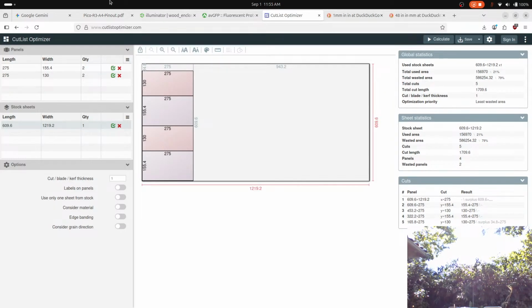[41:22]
Are you excited? Yeah. You sound excited. Mhm. Remember the last time we did woodworking? You came up with that brilliant strategy to put the thing under it. Oh my god, that was so sick.
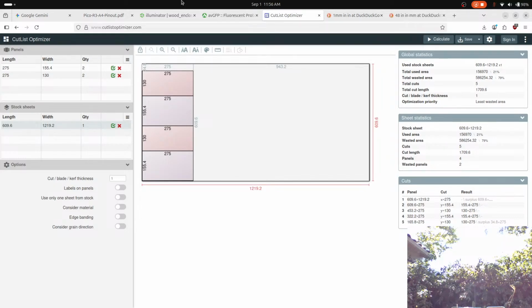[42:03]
Okay. So we don't quite need this yet, but will you help me come to the front and grab a table with me?
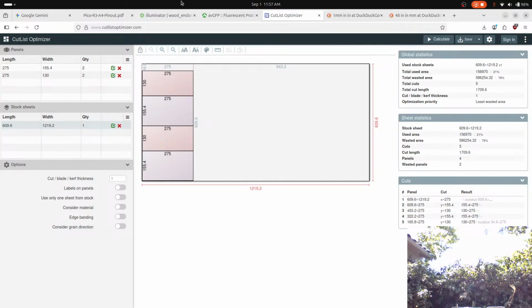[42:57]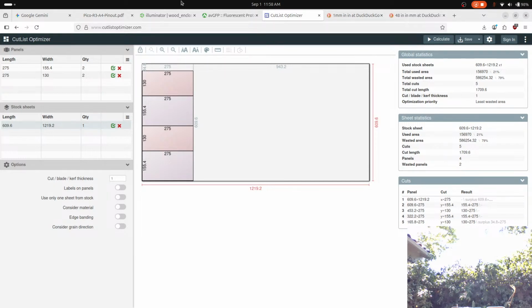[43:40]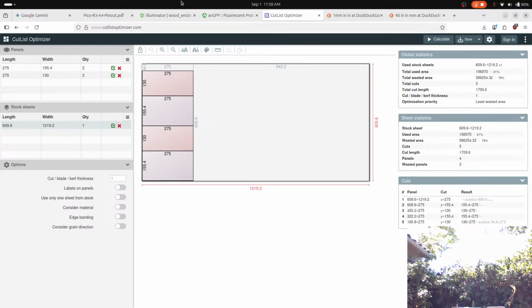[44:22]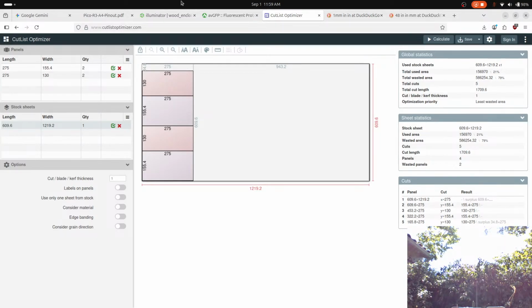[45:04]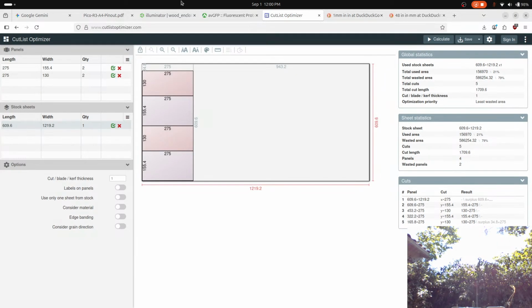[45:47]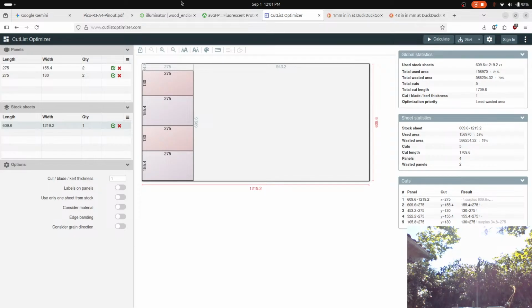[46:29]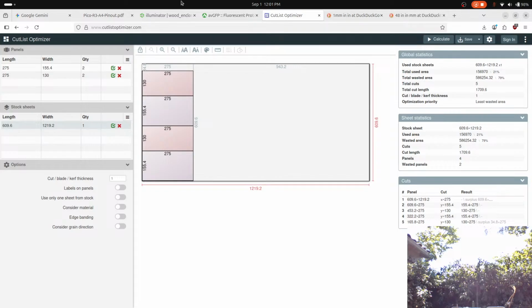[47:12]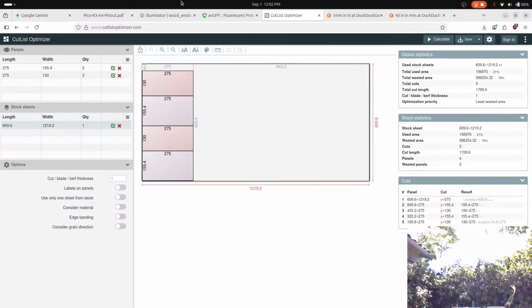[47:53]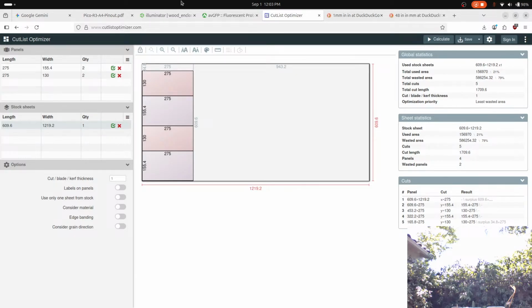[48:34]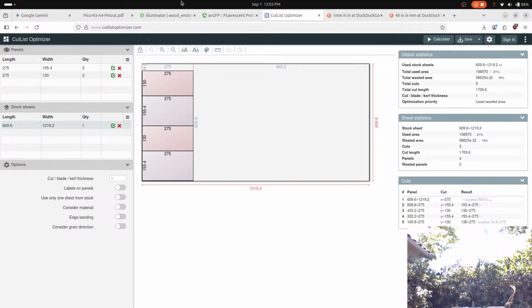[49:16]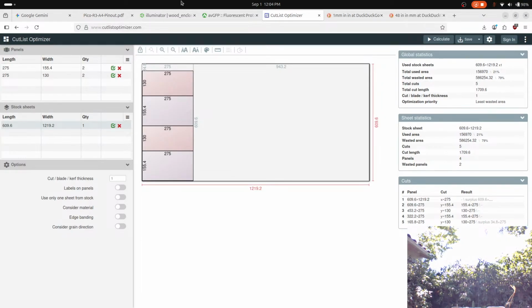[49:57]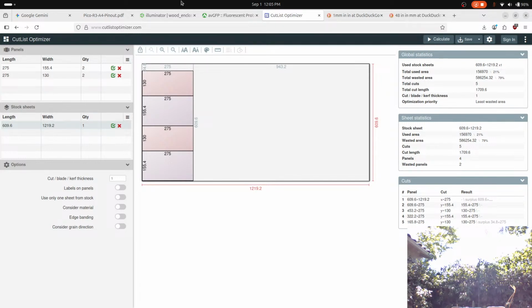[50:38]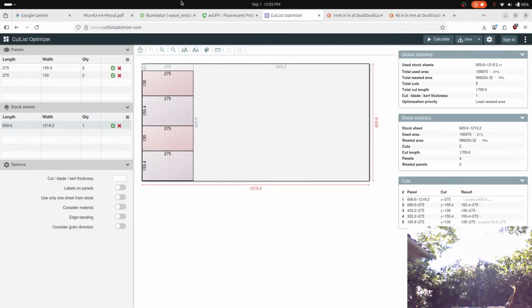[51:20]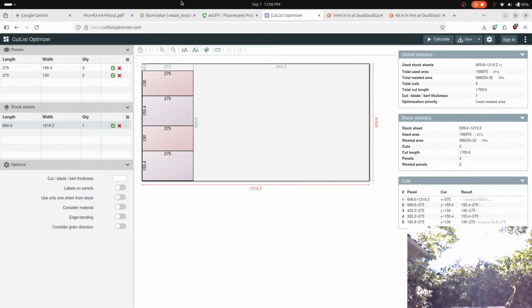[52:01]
Pencil. Do you want to cut? Okay. Okay, you need your safety goggles. I'm gonna put the camera on it.
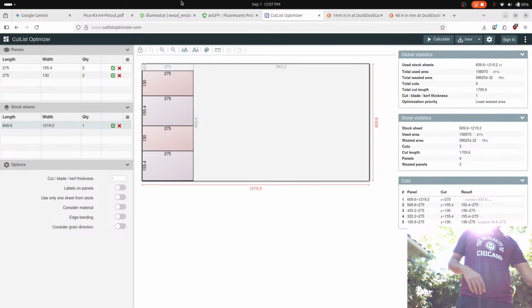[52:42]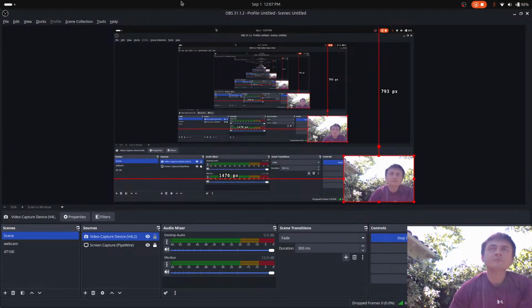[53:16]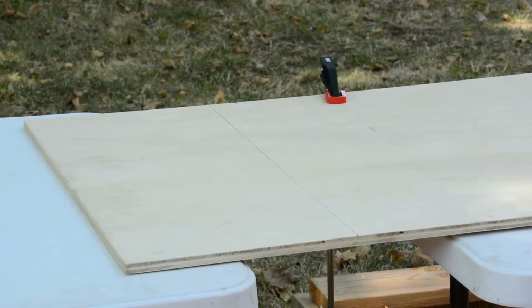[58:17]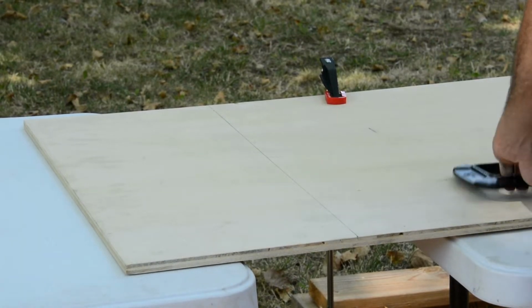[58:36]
Oh man. Properties. Oh, maybe I'll do this. Okay. So overkill, but I got these new clamps and I want to use them. The one thing I get to check is,
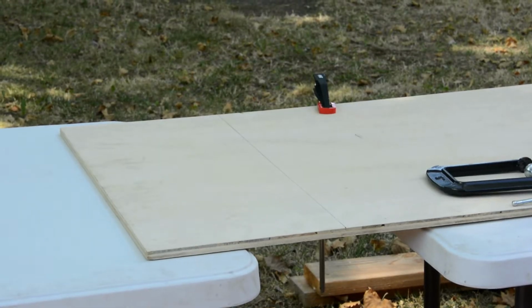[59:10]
when you hear that sound, it. Where's the? Oh wait, you just turned it off. I know. How do I turn that on? You're trying to change the focus? No, I'm trying to zoom. The zoom is this. It's the only zoom, and then this is focus. And then if you hold this down halfway, it'll auto focus. So is it on? Okay, it's on. You click this, and then you get the preview. But now, okay, we're good.
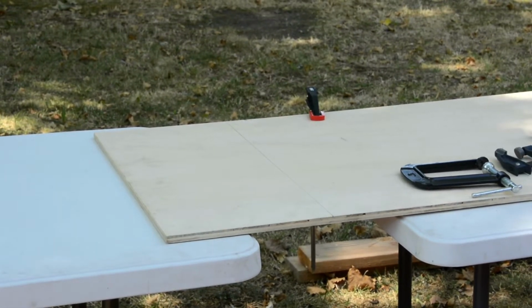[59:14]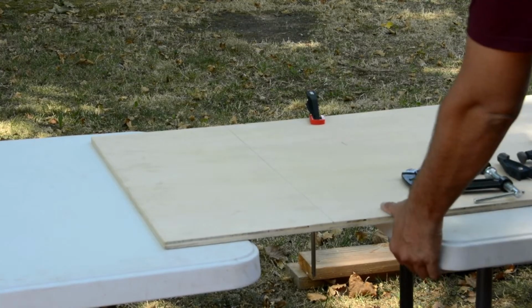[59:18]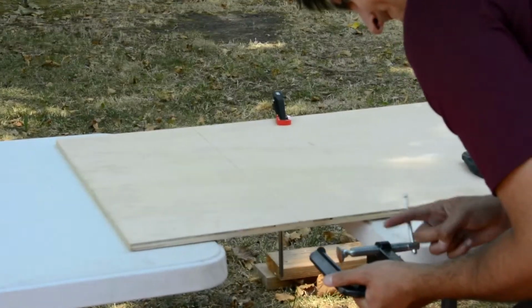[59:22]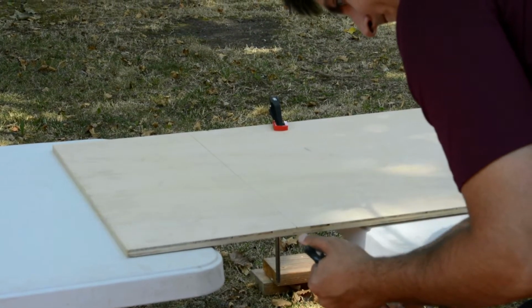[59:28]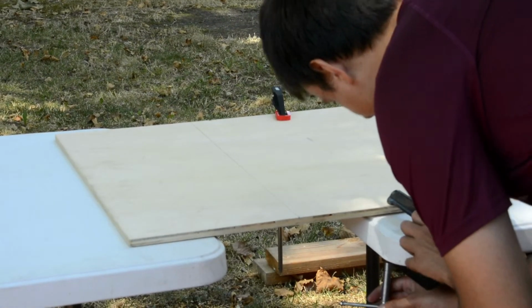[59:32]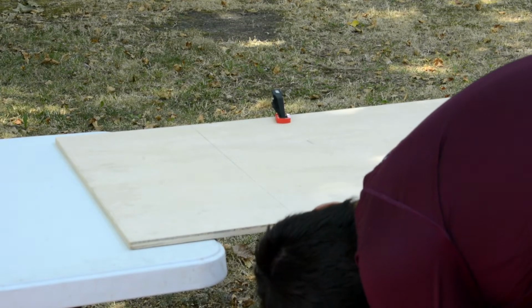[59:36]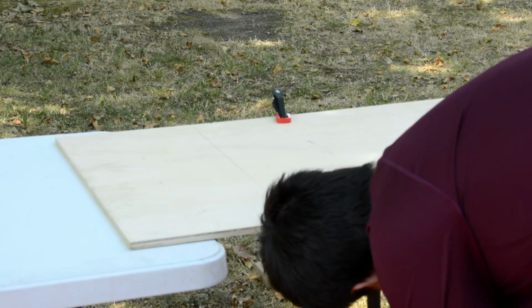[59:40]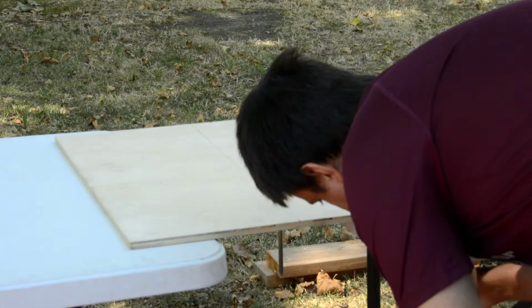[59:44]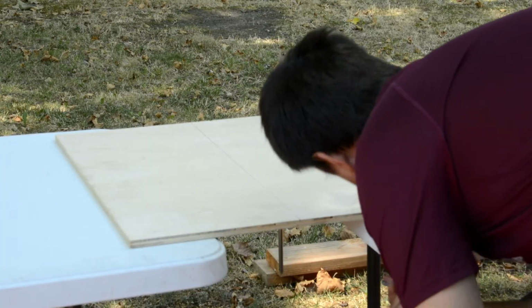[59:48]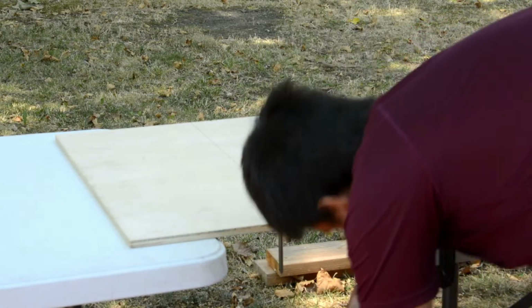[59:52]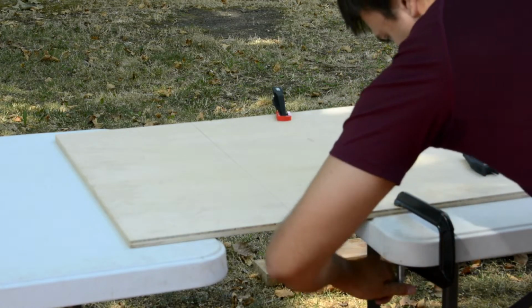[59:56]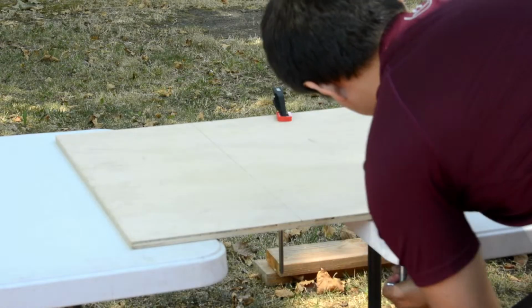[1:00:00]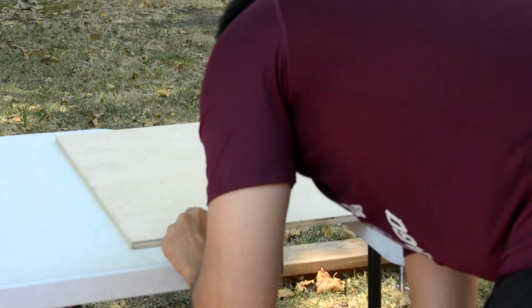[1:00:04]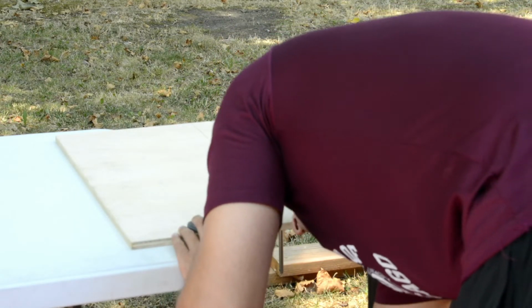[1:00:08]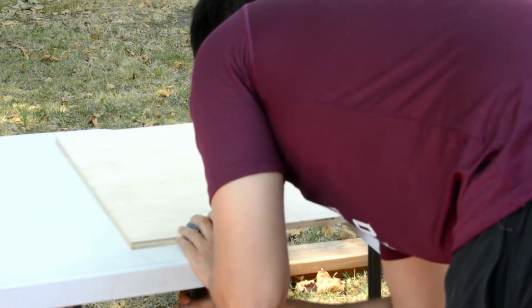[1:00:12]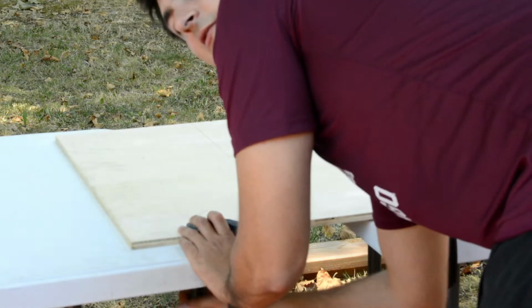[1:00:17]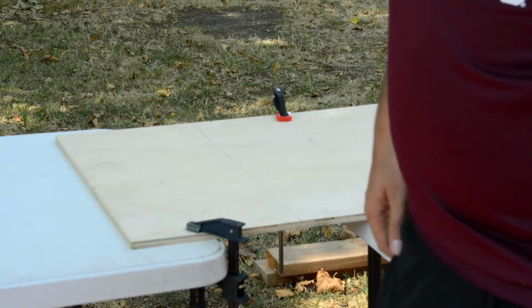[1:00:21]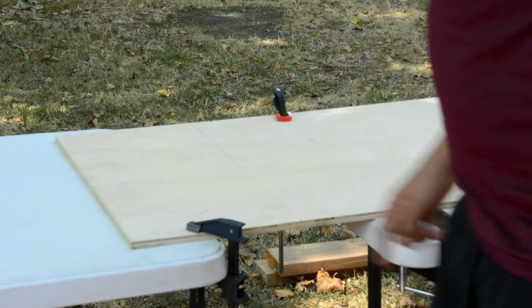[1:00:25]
Wondering if it's gonna collide. I mean, this is like so overkill, right? But it's not gonna move. We know that. Okay, so I'll do the fourth one just for fun.
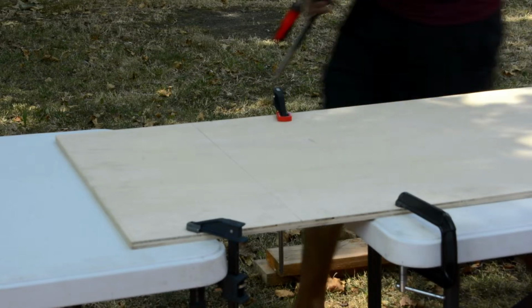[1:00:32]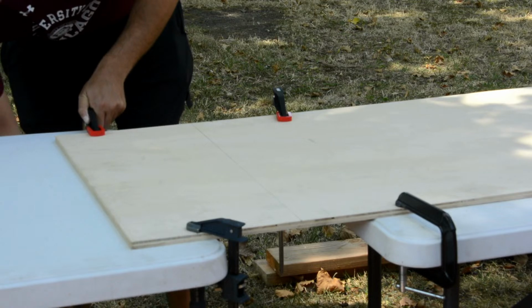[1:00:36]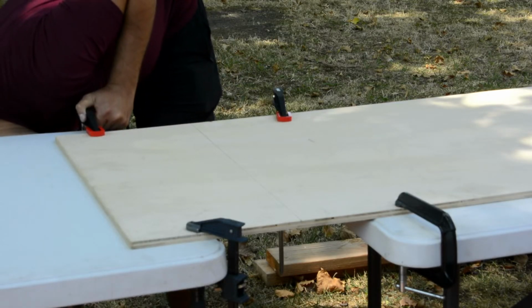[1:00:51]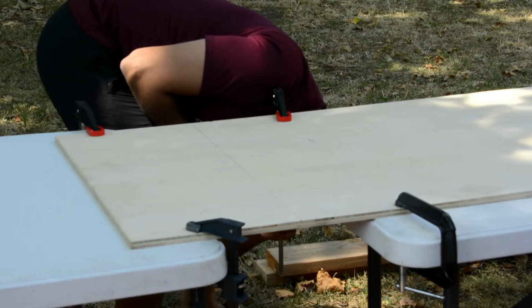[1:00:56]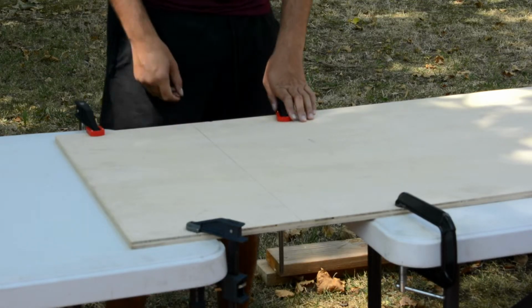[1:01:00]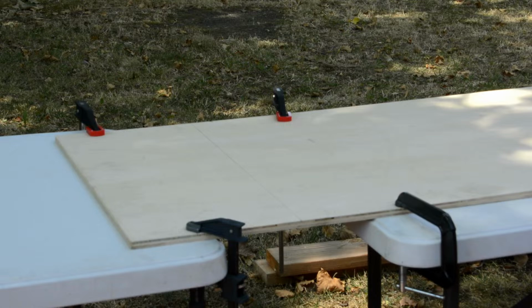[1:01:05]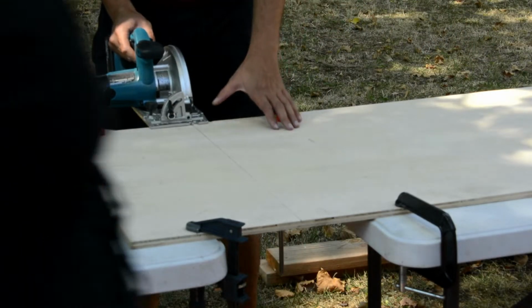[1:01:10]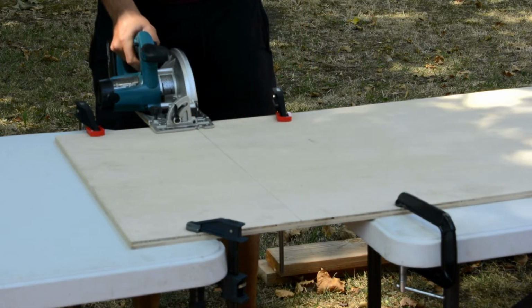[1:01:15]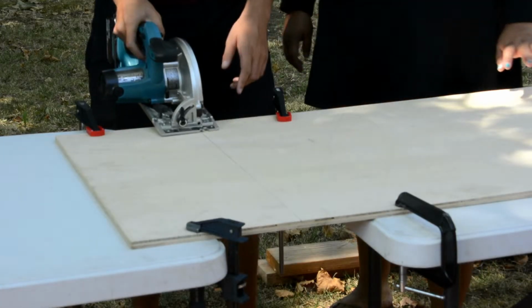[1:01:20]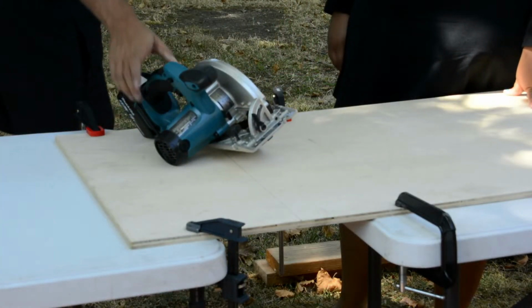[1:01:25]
Oh, I'm like deforming this plastic. Okay, well, it's going to be in place. All right, so you ready to cut it? Let's just see. So remember, this blade is a curve, so you want to cut on the left side of it, and then I don't think you might run into. I don't think you're gonna hit that, but you have to work on.
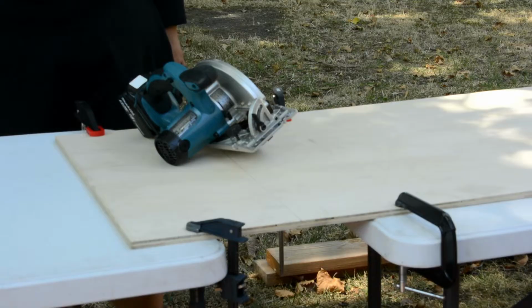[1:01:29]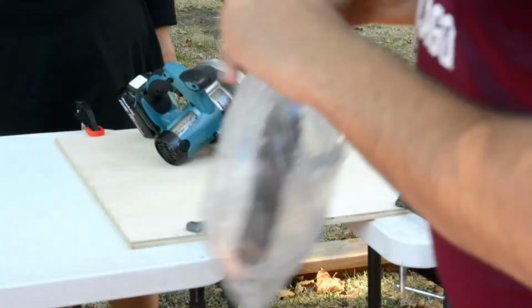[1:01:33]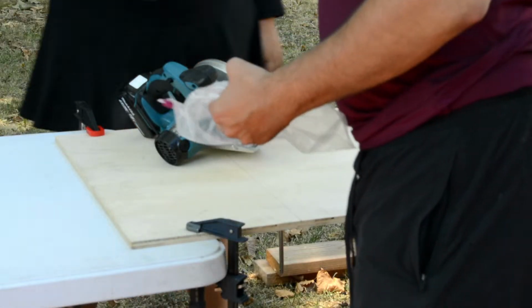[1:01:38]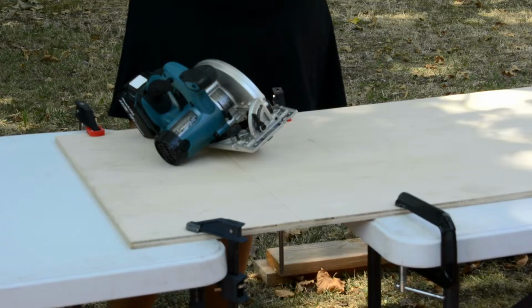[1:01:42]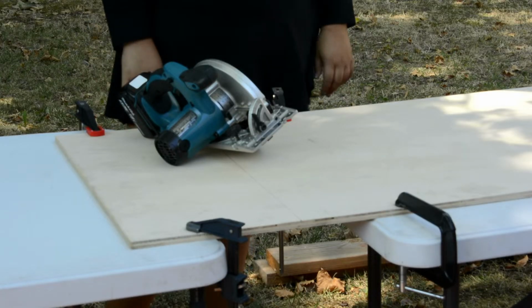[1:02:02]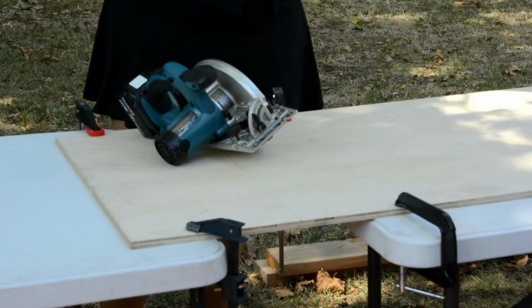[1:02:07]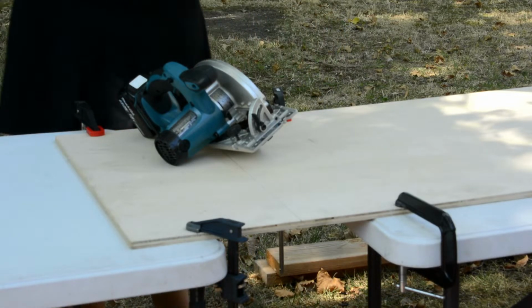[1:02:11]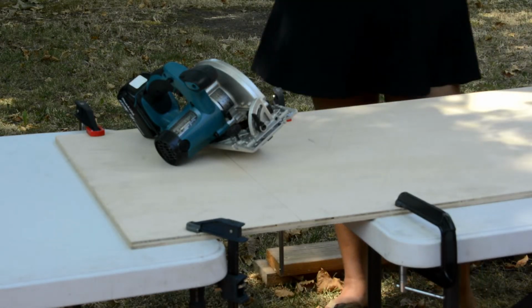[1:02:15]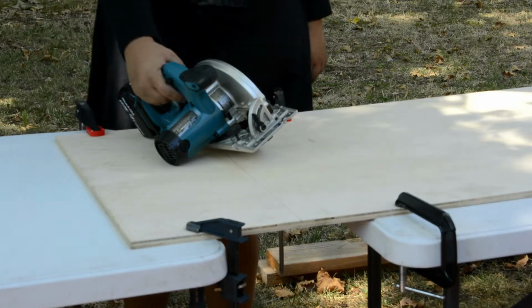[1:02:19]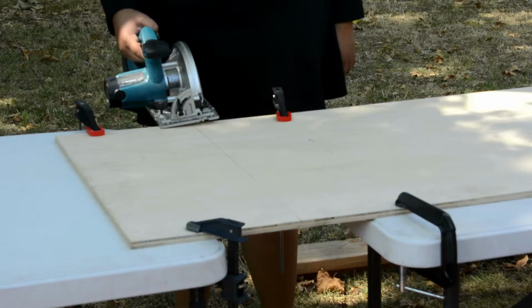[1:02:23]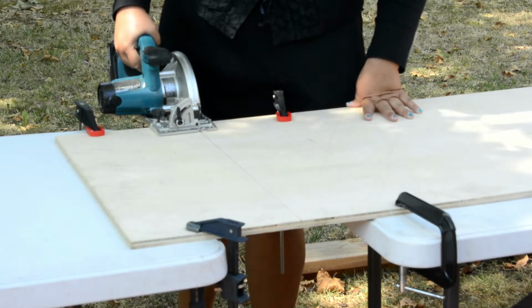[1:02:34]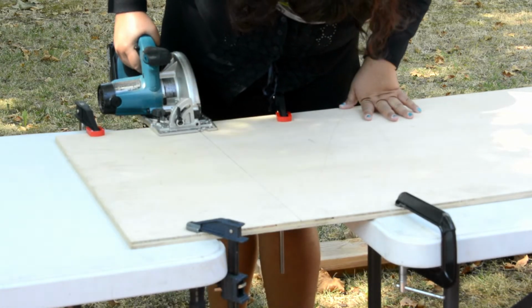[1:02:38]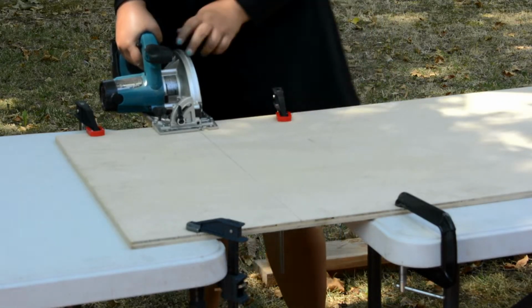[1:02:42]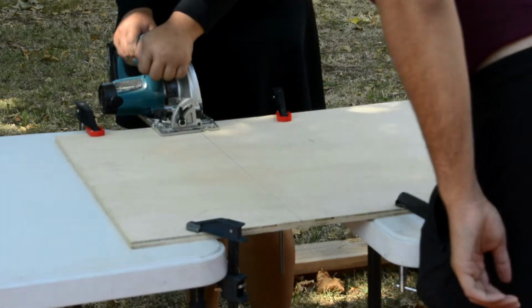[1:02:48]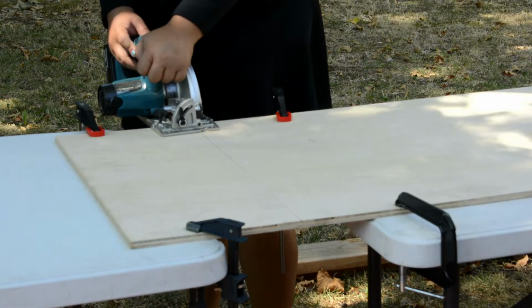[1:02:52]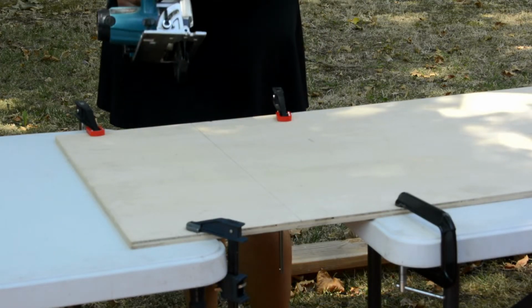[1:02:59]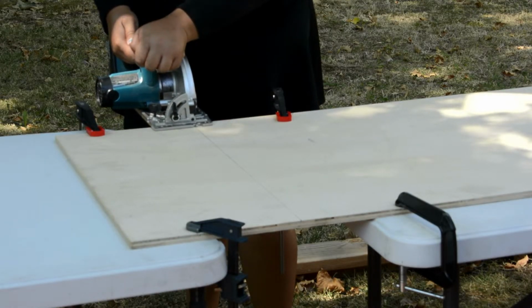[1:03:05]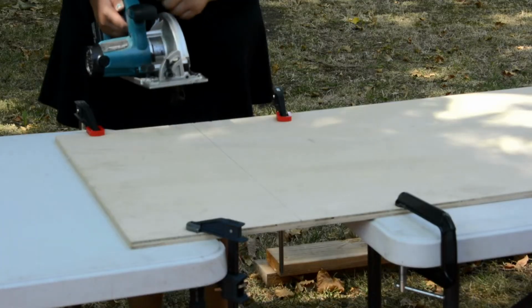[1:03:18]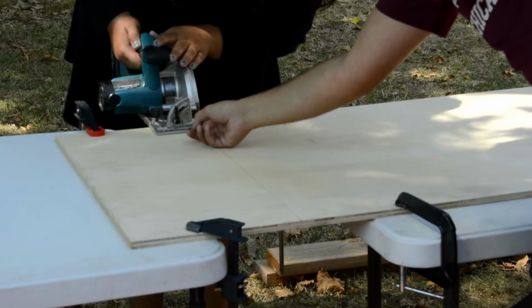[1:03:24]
It's like a millimeter. As long as you're on the left side, you're good. Oh, to use this, there's a safety where this thing, you push it down. Good. Did it die? I think you want to line up with this thing.
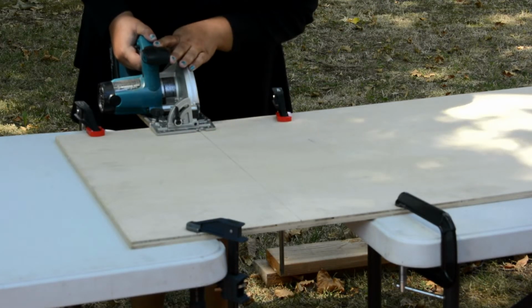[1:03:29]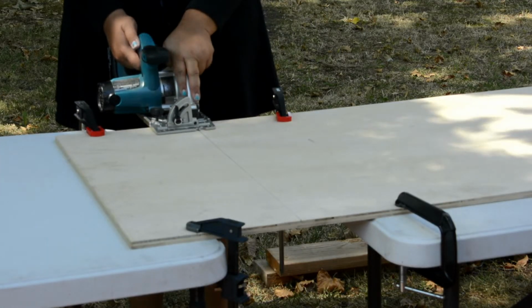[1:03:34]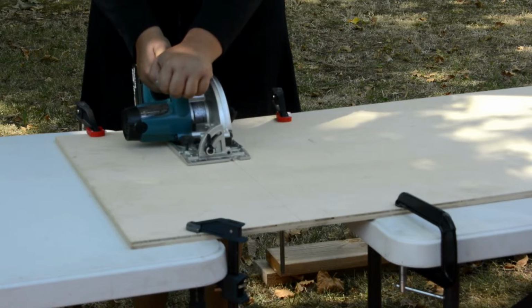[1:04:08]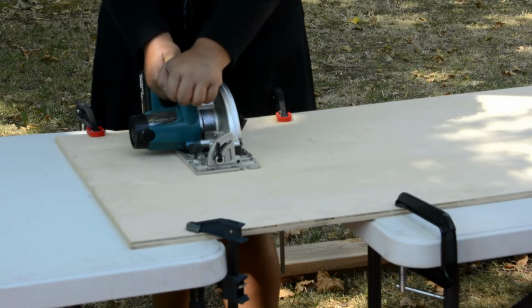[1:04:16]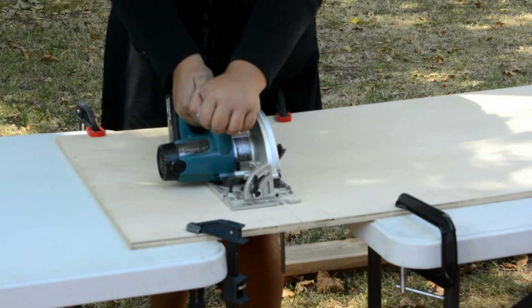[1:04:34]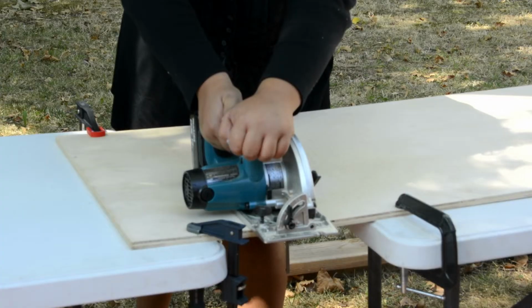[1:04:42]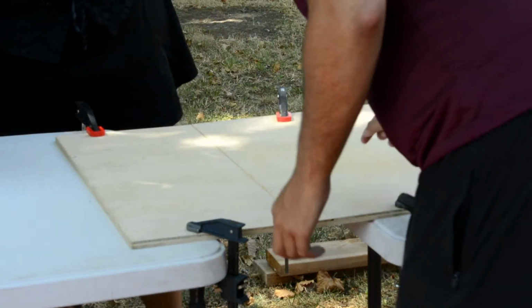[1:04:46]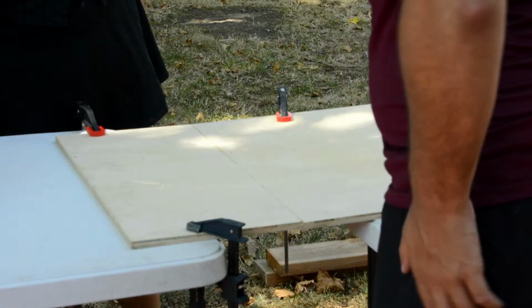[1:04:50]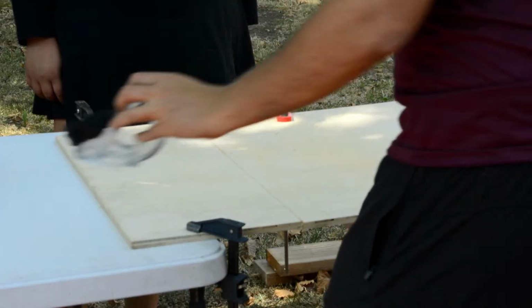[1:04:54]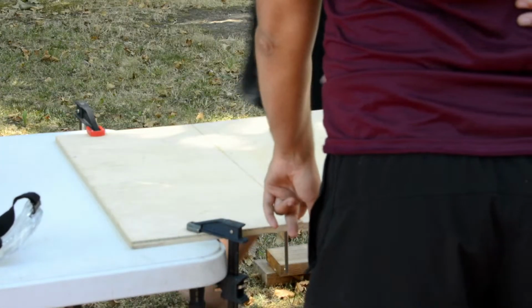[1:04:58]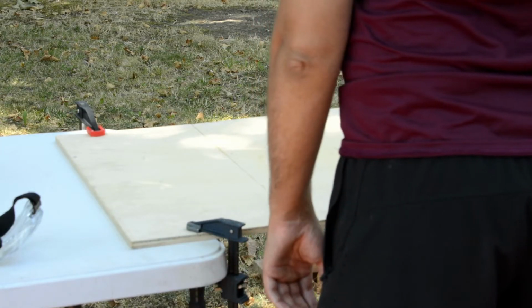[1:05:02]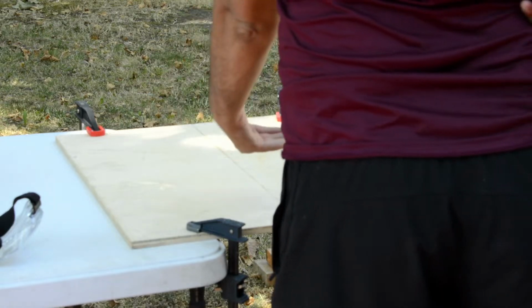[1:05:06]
All right. Okay, so now we need to measure. And what's good about this is that this cut is the height of the thing. So this is 275.
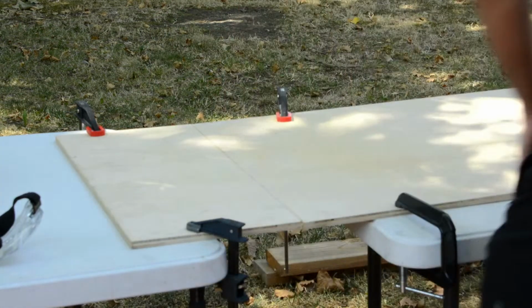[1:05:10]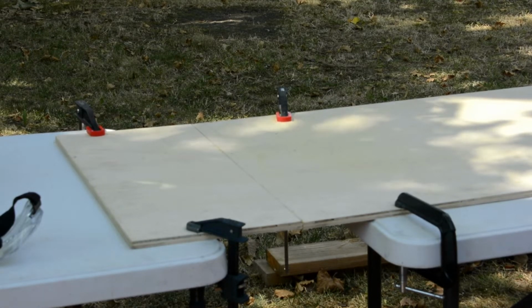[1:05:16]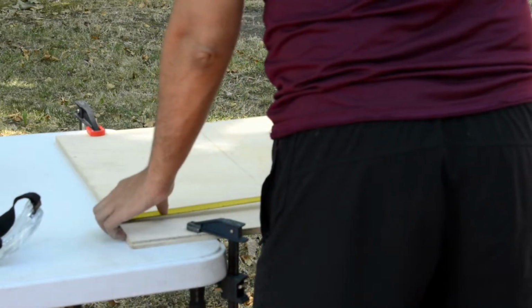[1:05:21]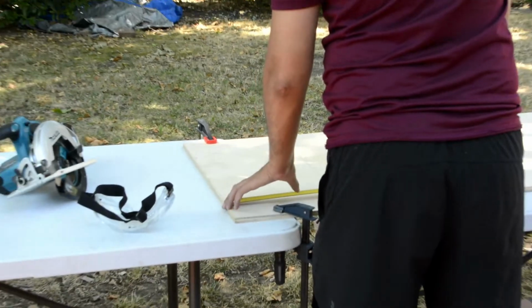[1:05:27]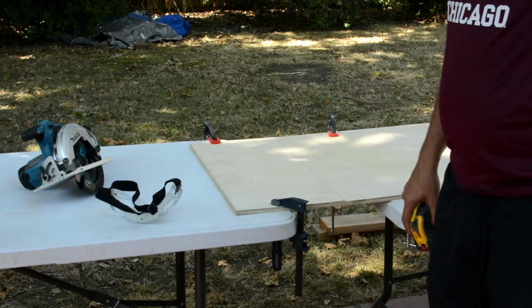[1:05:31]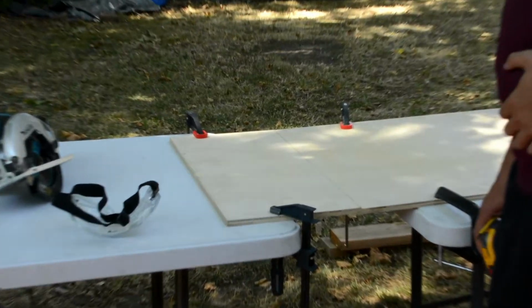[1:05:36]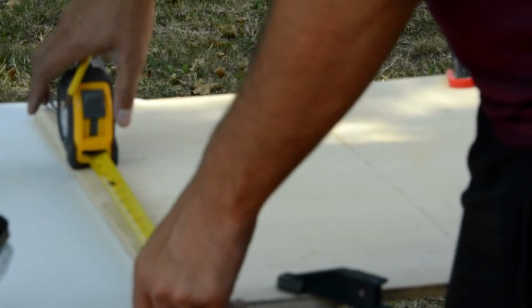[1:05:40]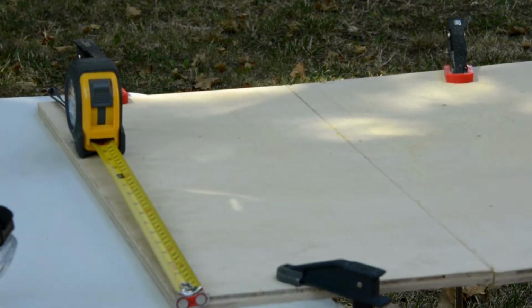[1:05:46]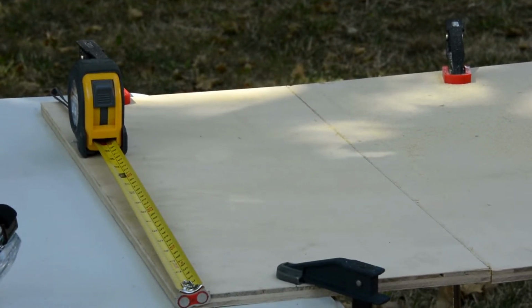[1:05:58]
This thing has rubber pads on it, man. I invested in like a $25 nice tape measure, and it was so worth it. It's kind of out of focus, isn't it? Yeah. There you go.
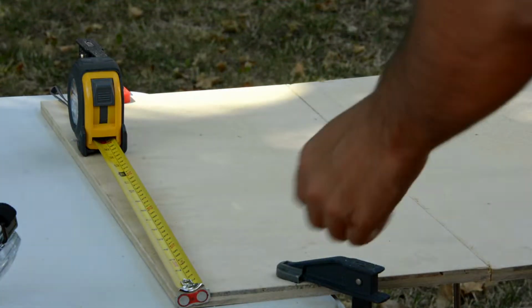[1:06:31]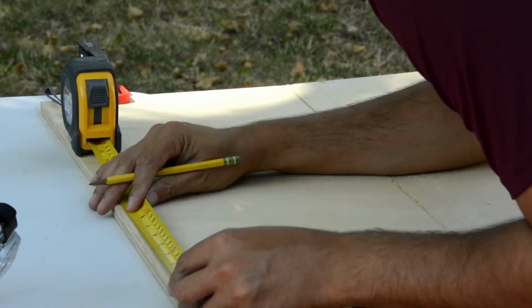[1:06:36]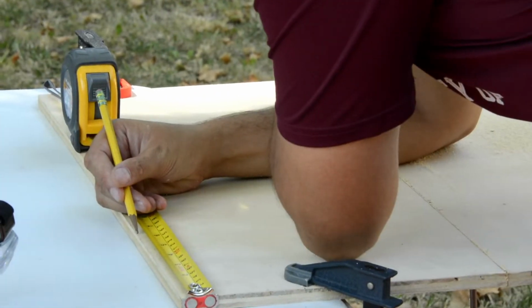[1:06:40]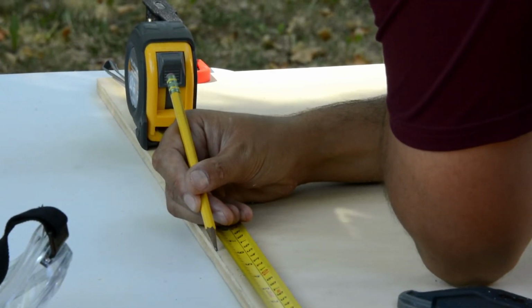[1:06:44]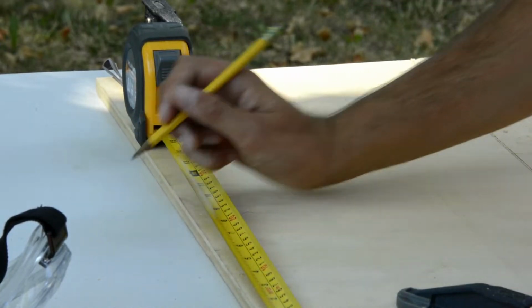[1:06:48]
Okay, so yeah, so 155.4, 130, 155.4, 130, 155.4, 130, and then excess. Do you want to measure? You don't like measuring? So 155. Okay. Then
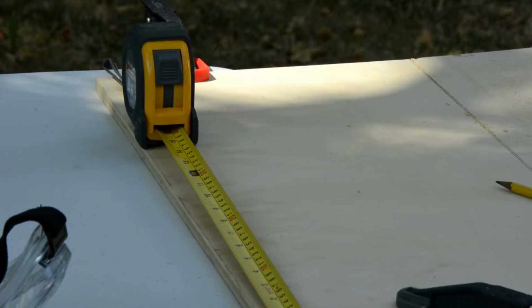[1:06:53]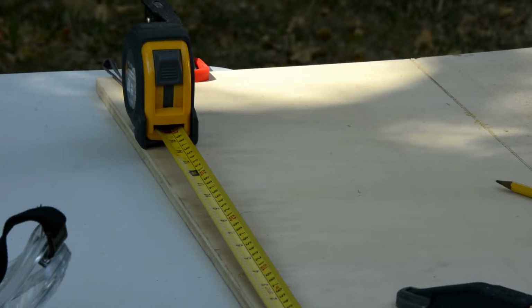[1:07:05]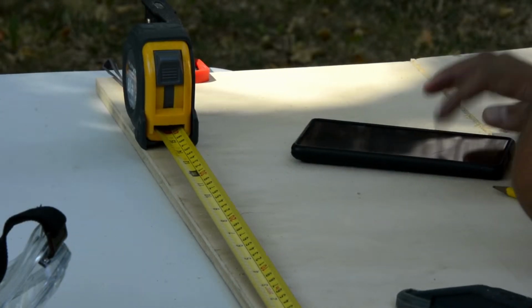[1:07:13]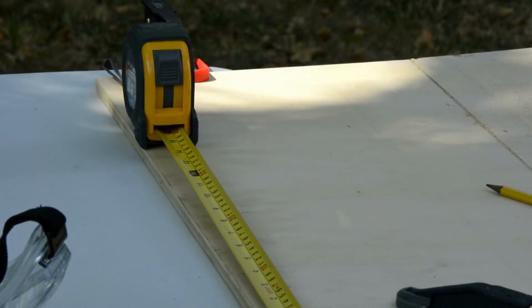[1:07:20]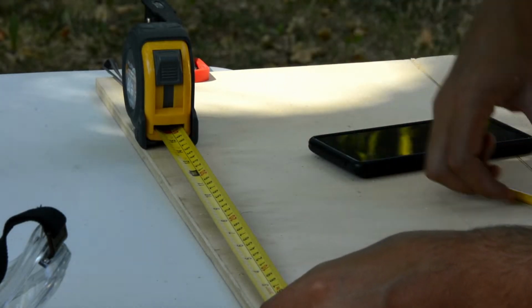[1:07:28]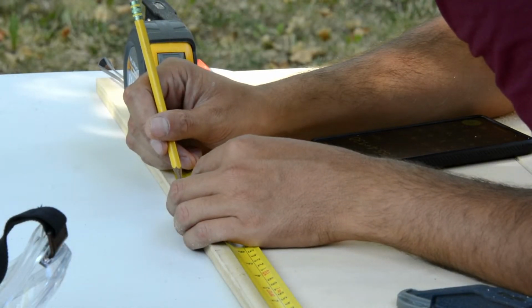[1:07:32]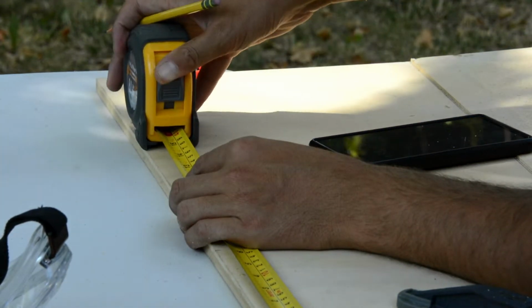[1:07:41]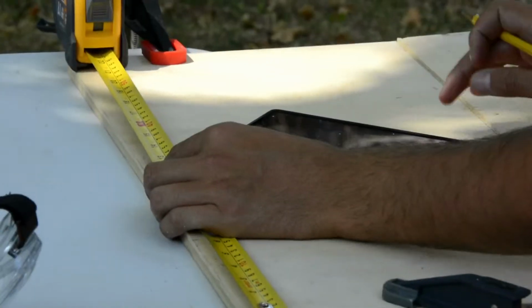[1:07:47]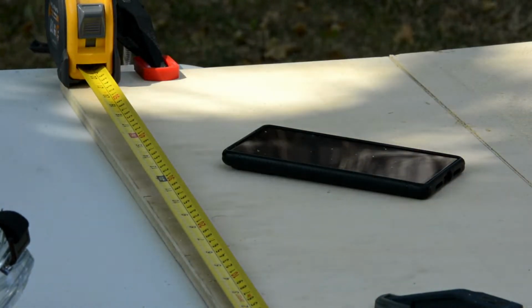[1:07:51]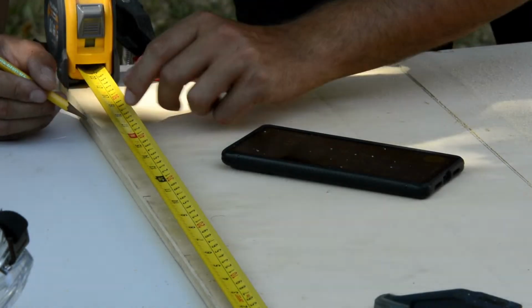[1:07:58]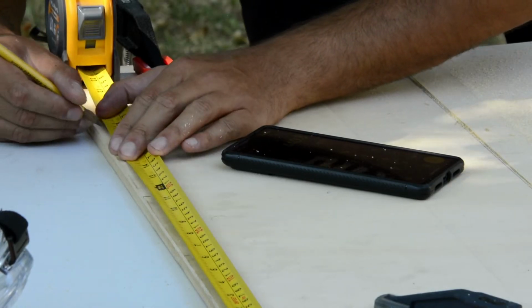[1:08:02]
You sent me a photo of a cup. Yeah, just make it in my calculator. 155.4 plus 1. Ooh, look at the font. What a great font. 285. Plus 157.4. 440. 440.8. So 441.
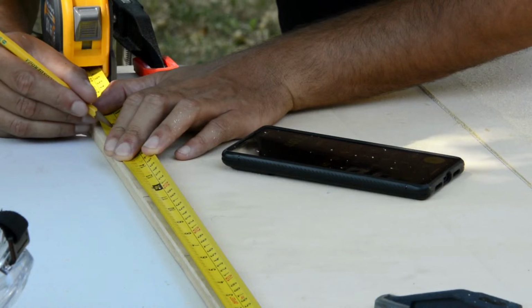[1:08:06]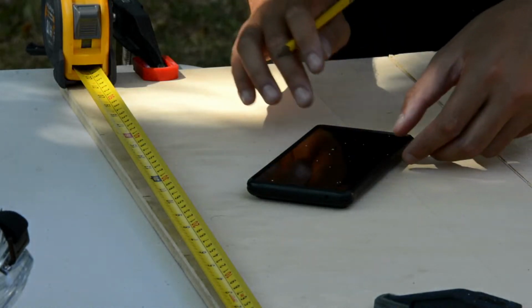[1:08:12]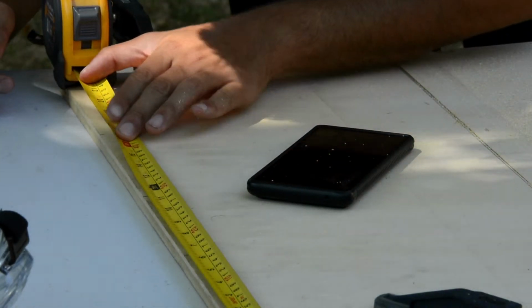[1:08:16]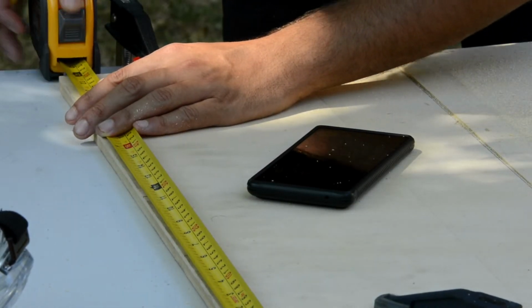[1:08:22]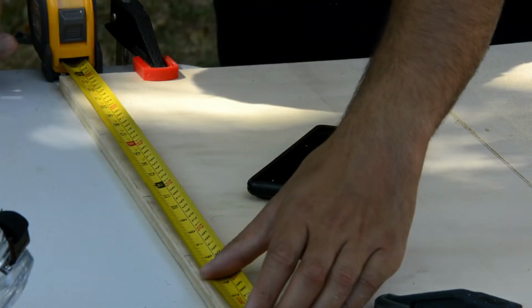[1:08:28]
Okay. 570. Thank you. 571.
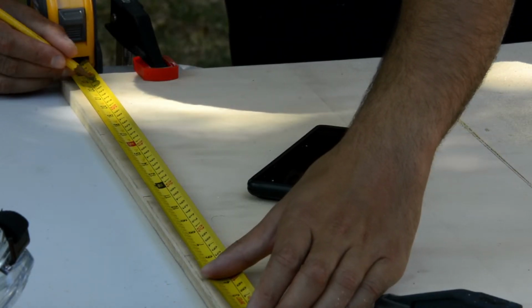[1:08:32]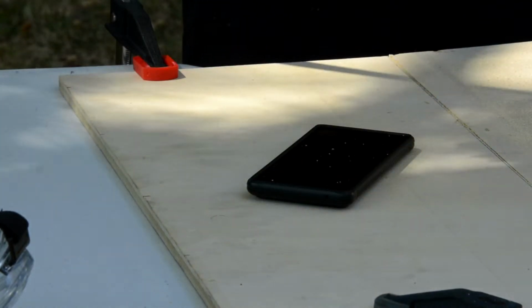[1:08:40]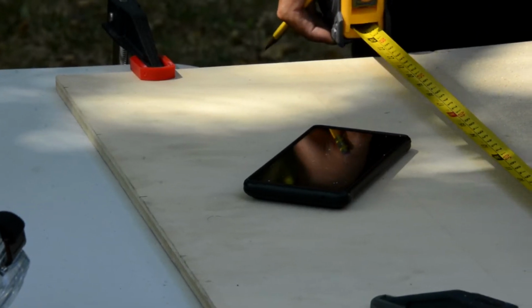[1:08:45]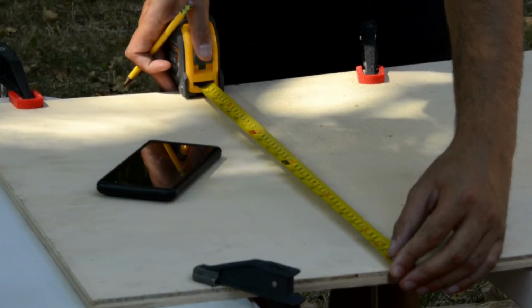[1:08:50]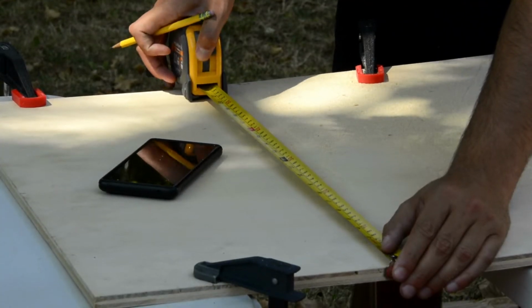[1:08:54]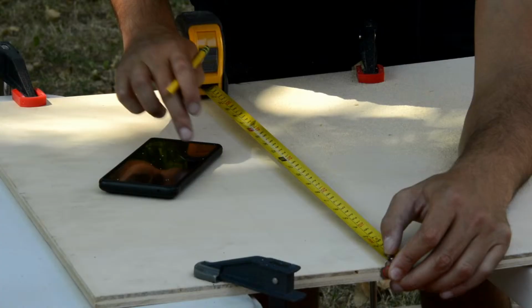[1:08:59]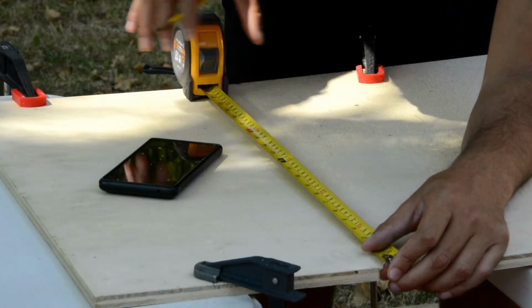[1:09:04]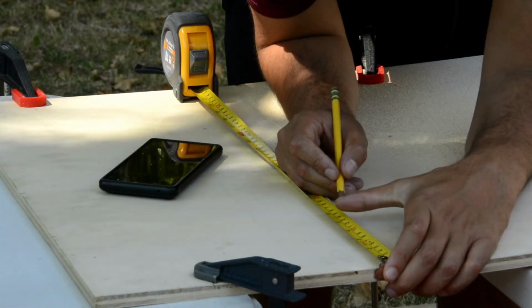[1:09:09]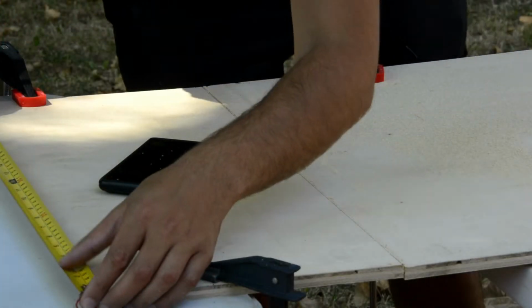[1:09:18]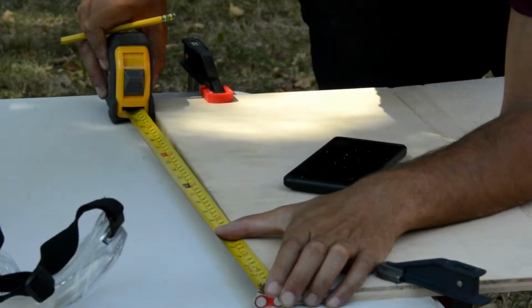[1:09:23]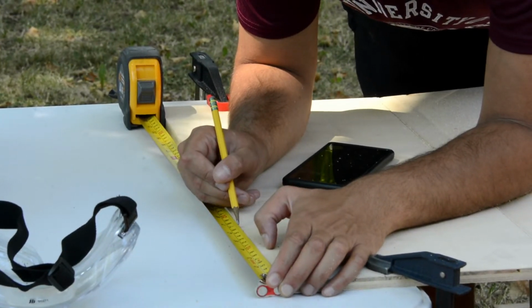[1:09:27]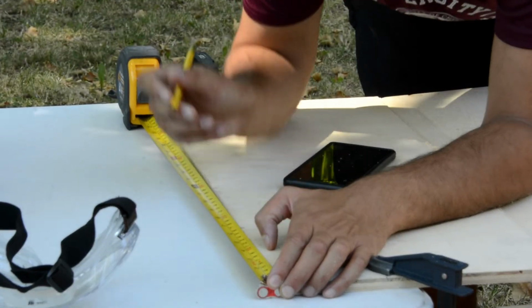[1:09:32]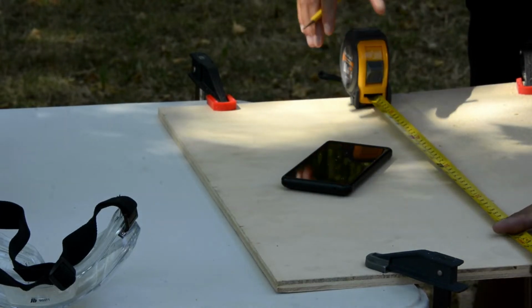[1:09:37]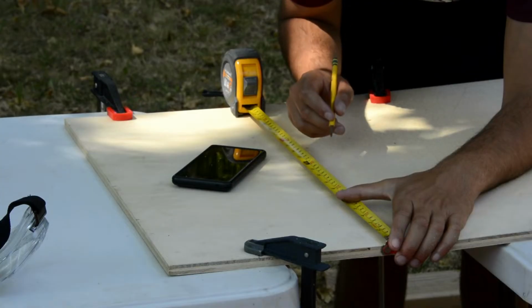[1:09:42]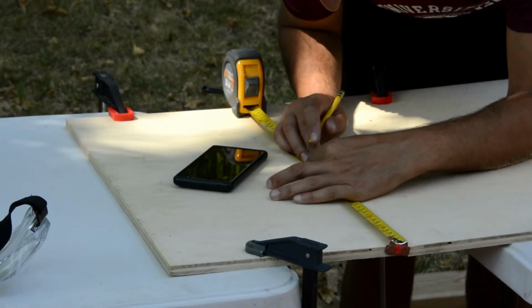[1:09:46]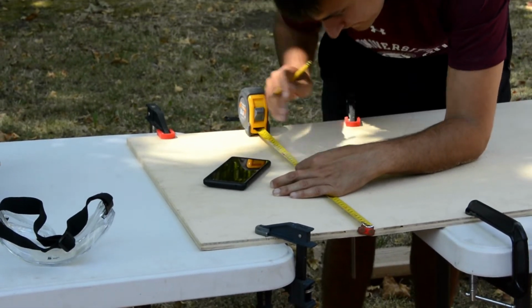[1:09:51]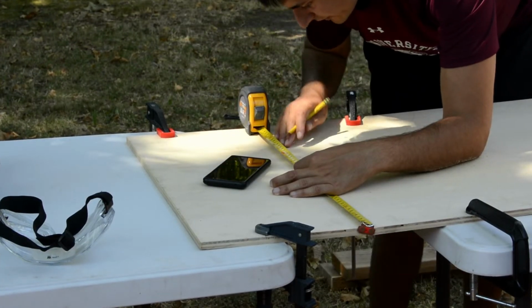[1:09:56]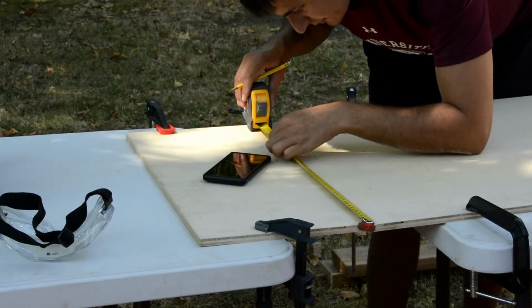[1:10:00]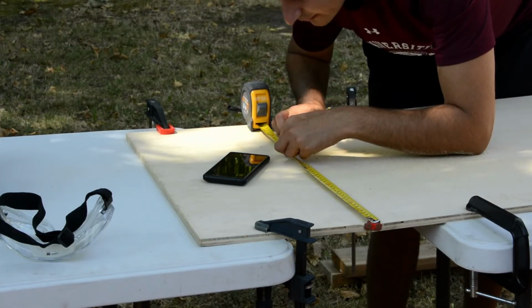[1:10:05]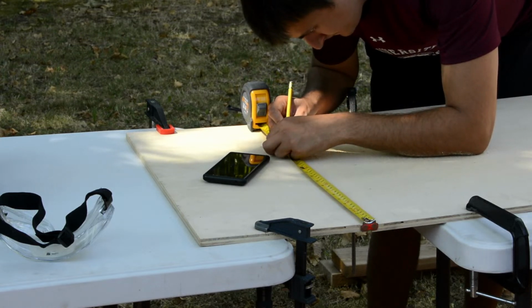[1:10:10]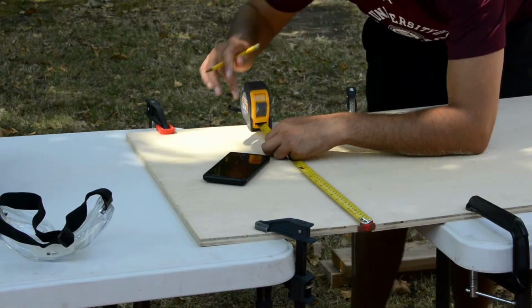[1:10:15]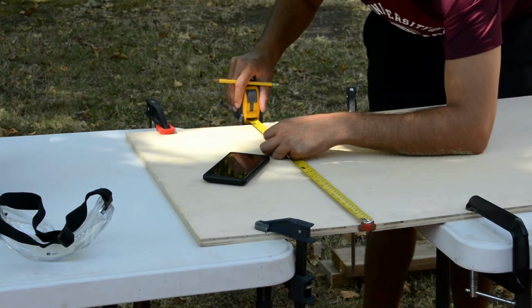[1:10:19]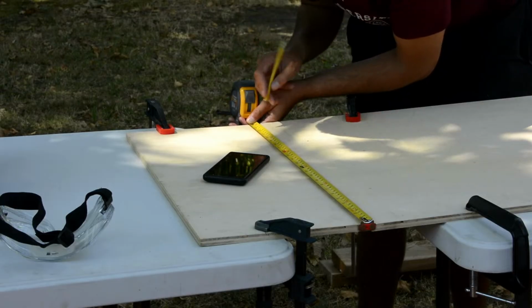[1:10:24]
Okay, so now I gotta just do the same over here. I can draw the line. Okay, so 155.4. 155. Plus 130, 285.4, 285. Plus 155.4, 440.8. 440. Okay, plus 130, 570. Yeah, that's it.
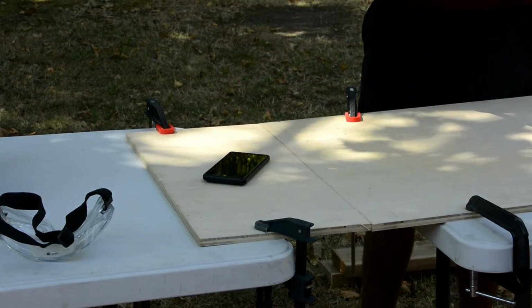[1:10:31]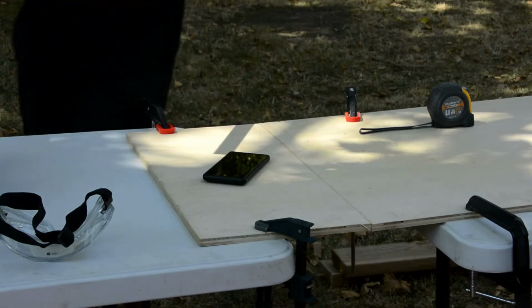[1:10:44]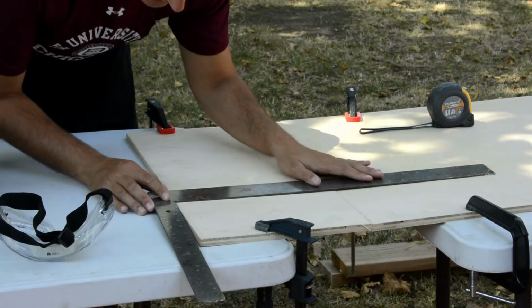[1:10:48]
All right. I hit you right back. Okay.
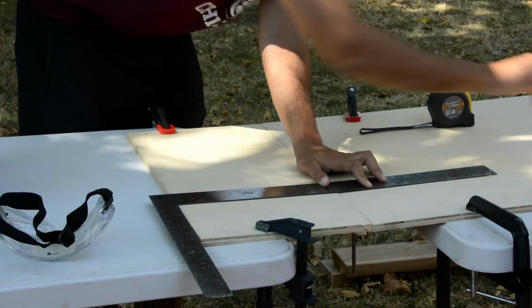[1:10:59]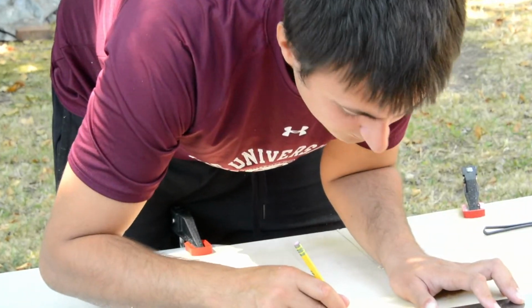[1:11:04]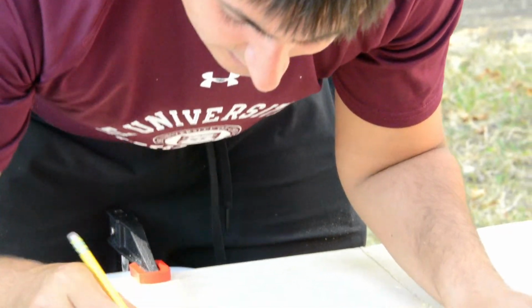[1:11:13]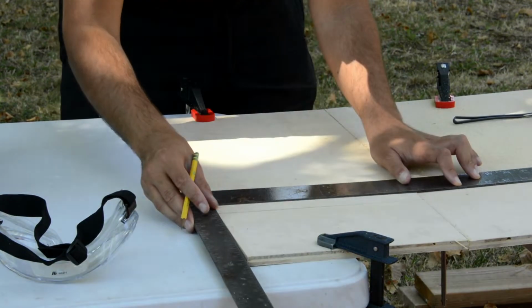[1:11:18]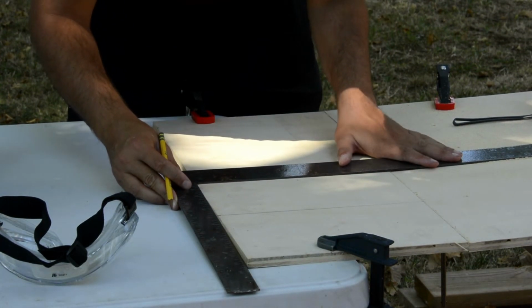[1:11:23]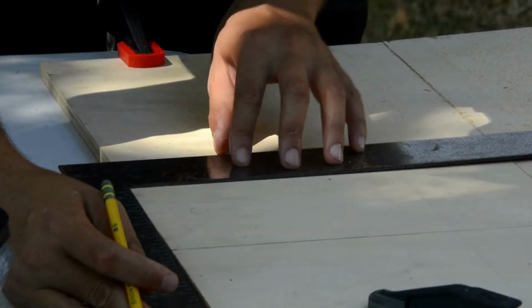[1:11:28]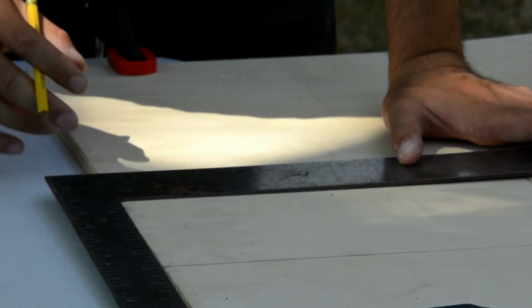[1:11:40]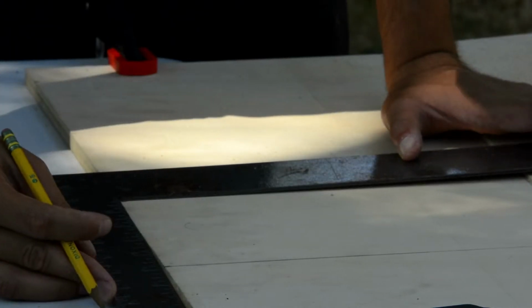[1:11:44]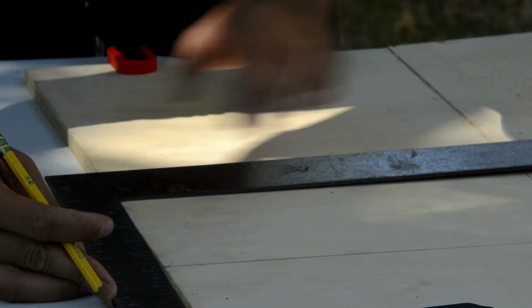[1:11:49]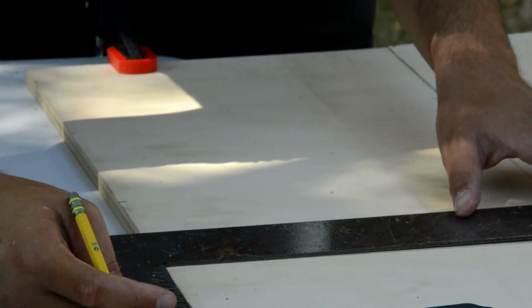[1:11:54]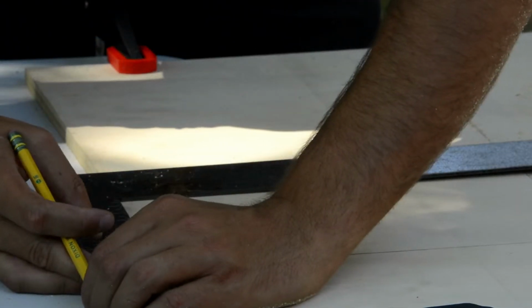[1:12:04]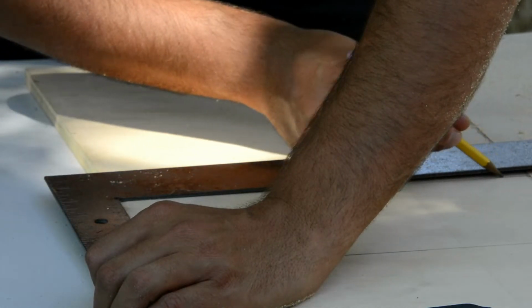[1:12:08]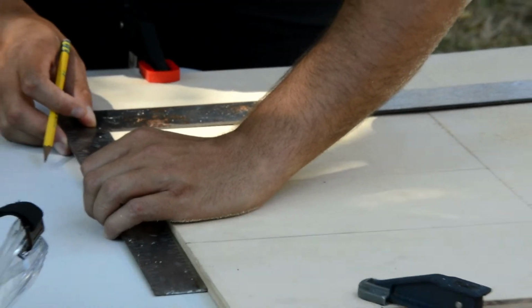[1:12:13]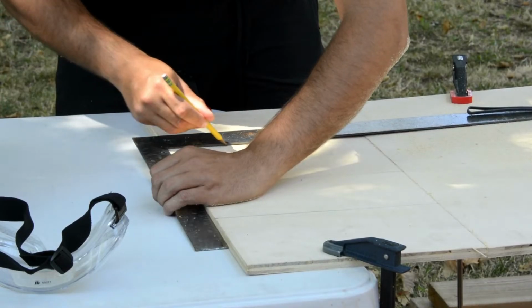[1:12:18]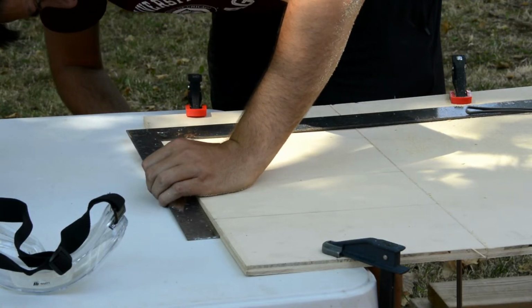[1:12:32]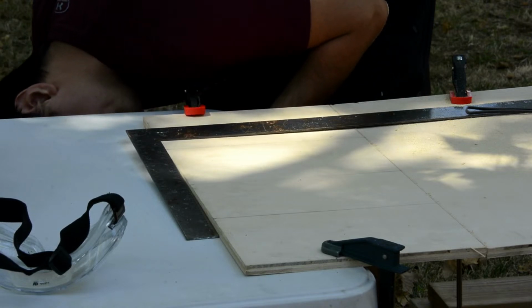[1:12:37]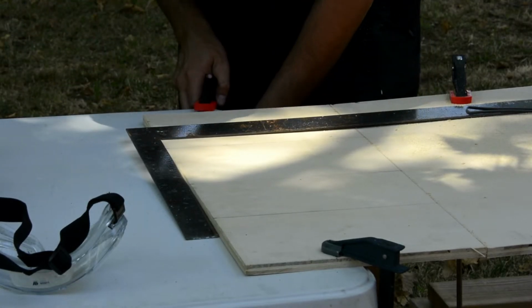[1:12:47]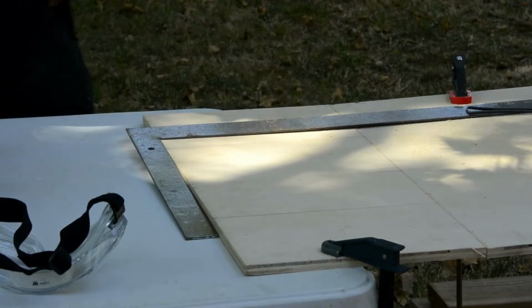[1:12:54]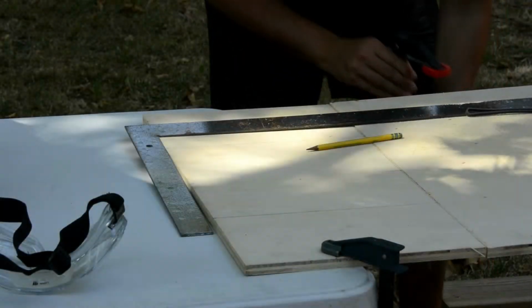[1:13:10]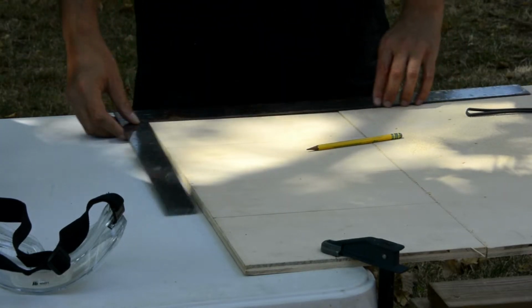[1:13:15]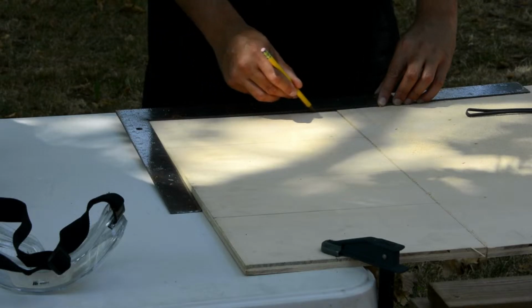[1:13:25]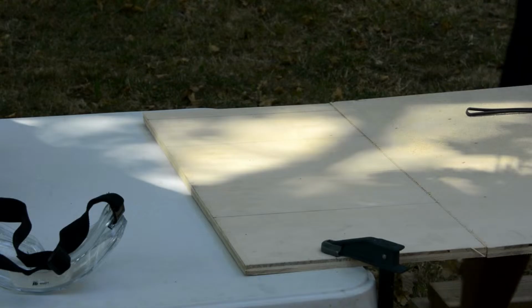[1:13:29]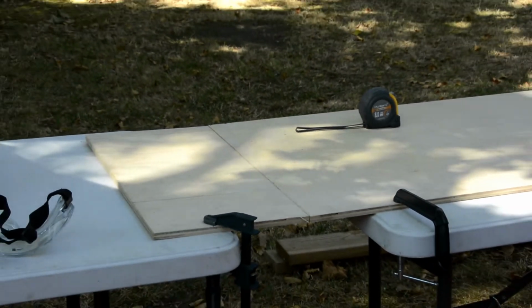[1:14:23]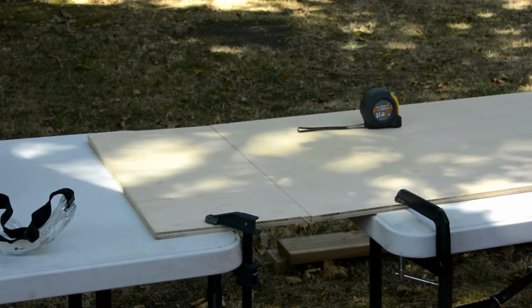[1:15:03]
You should have a crack at it. Okay, I'll try it. You know the song? With this dance, I hit you right back. I feel like it's like do you know the internet? Like Sid the Kid. You know who that is? Maybe it's not. It's so hard. I don't know, because I don't know what you're singing. Let me just look at the internet. I don't know.
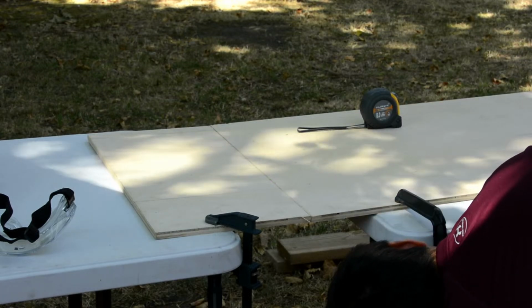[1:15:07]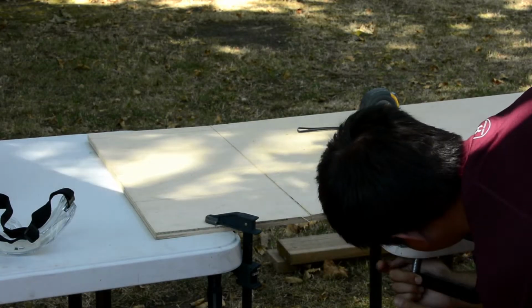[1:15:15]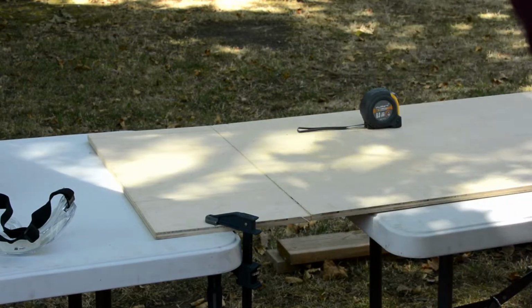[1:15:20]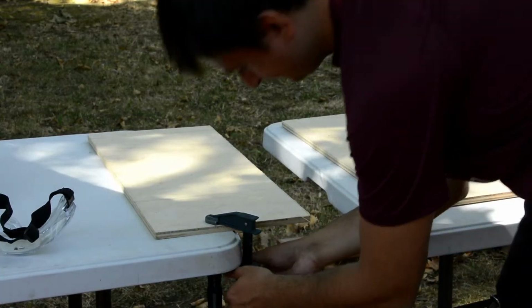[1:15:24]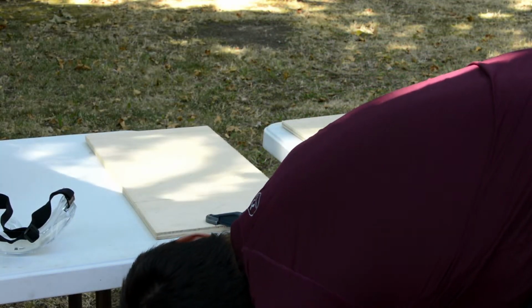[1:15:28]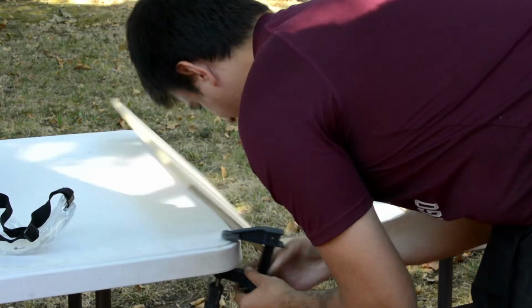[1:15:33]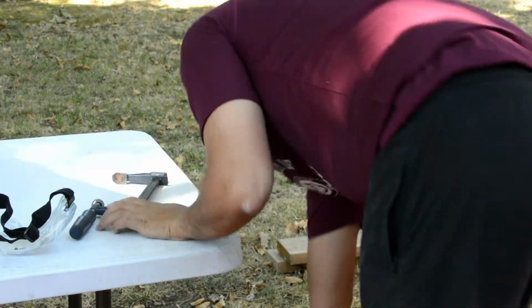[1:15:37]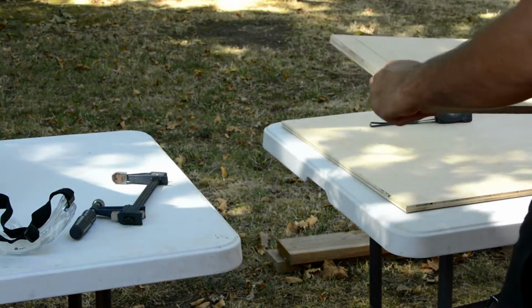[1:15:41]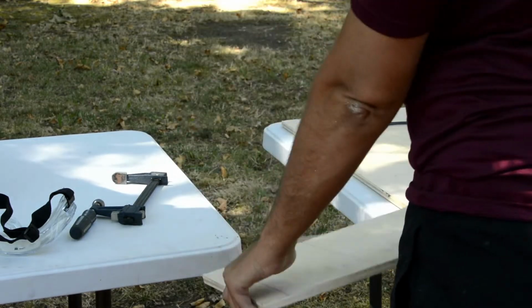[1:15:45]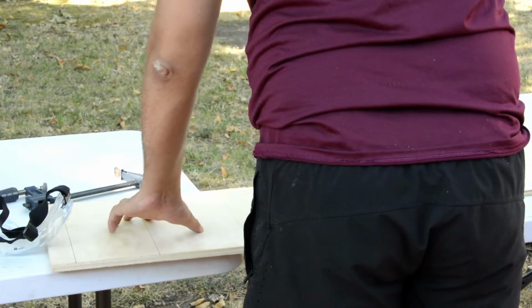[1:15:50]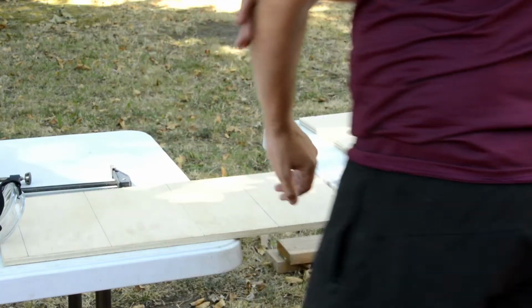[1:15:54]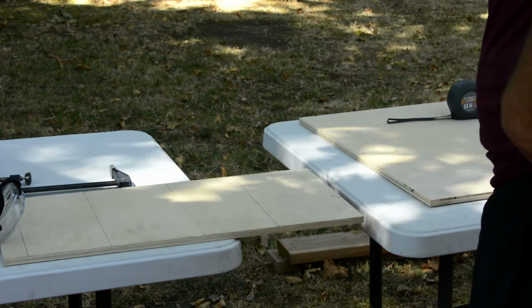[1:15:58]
Man, I really dug into this. Your elbow's crusty. You have crusty elbow. Wipe it off. What is that? It looks nasty. Yeah, but it looks like you have crusty elbow.
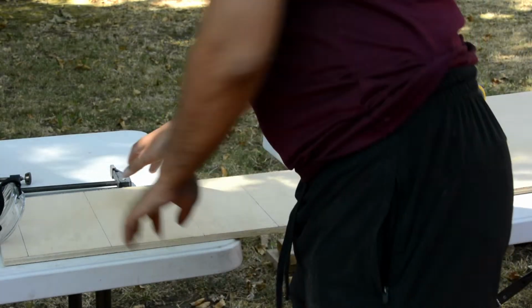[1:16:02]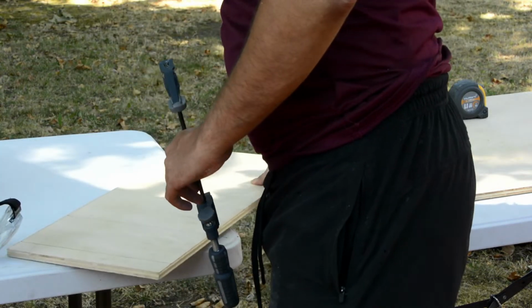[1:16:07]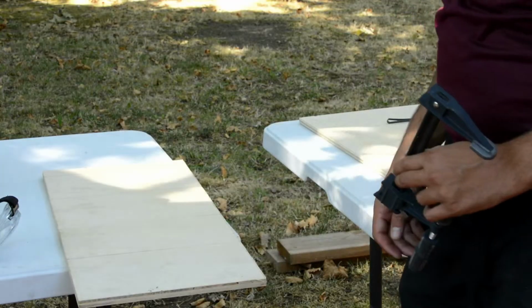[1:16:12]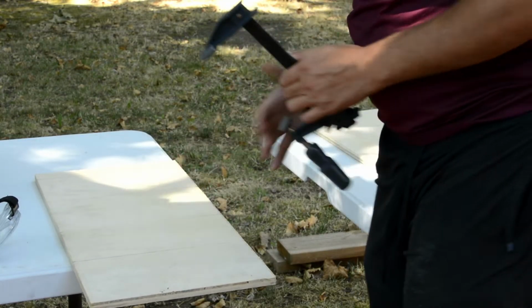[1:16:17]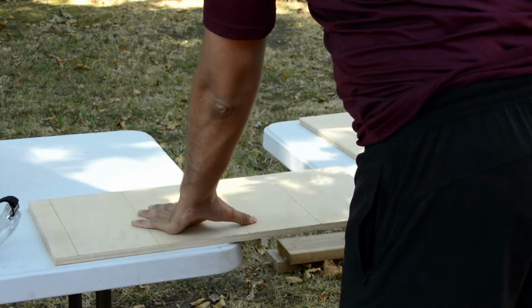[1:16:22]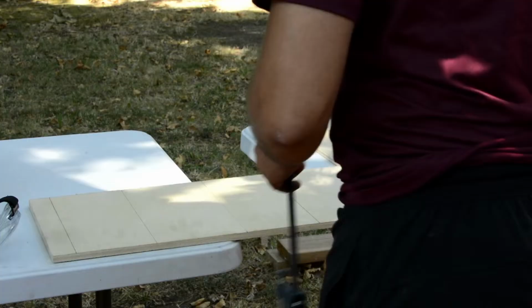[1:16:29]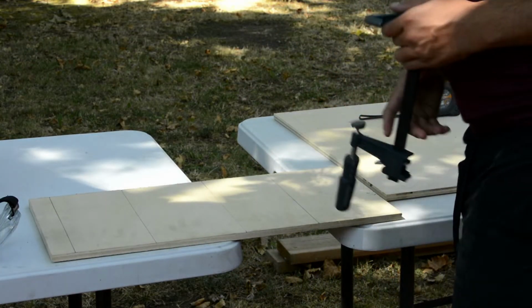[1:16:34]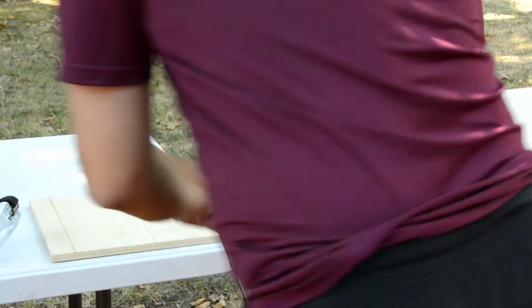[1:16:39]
If I do it like this, I can easily get. If I do it like this, I would do it like that. You do it like this. Yeah. But would you clamp it 4 times? Here, I'll just do 2 clamps. Do the new ones. Because the new ones have more depth to them, to the mouth. So it goes in further, so you'll have a better grip to it.
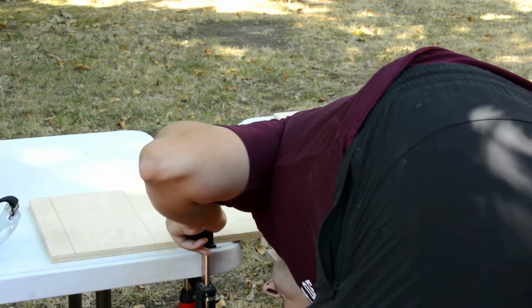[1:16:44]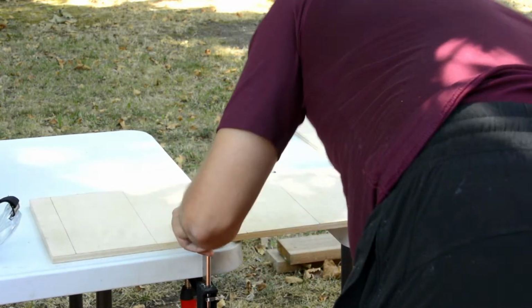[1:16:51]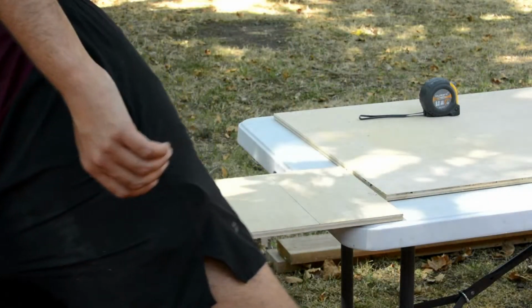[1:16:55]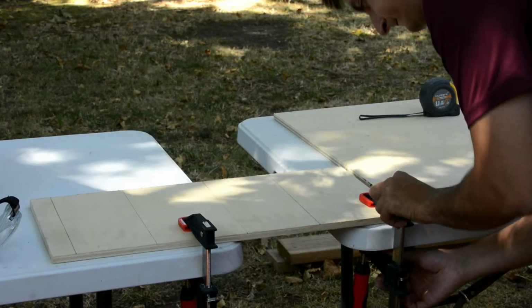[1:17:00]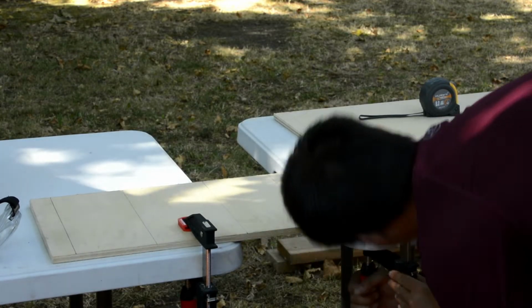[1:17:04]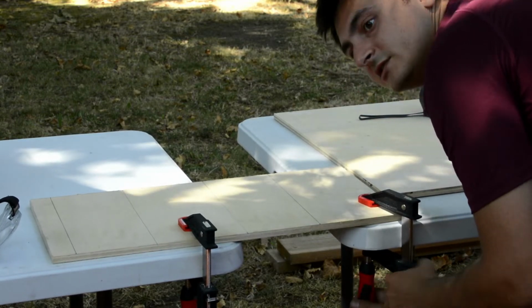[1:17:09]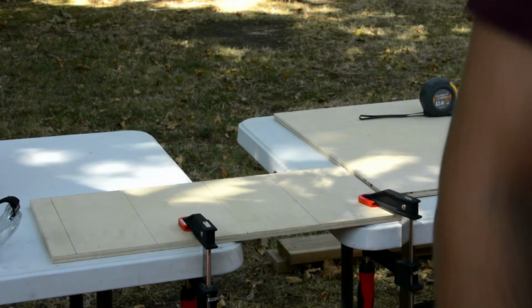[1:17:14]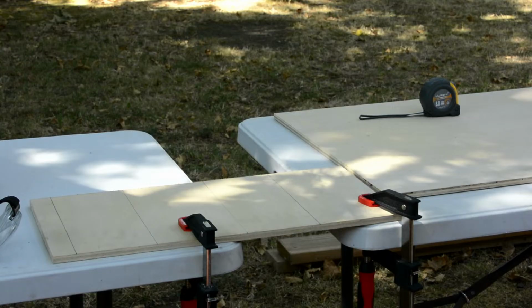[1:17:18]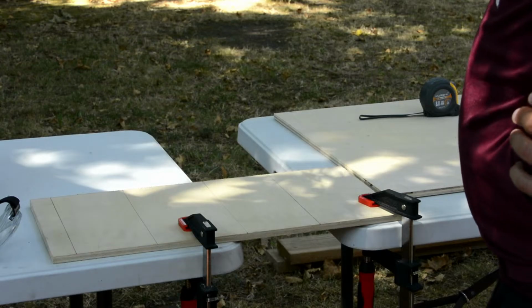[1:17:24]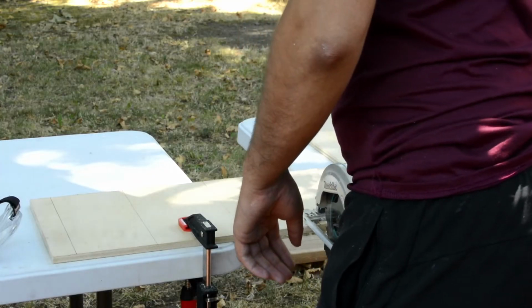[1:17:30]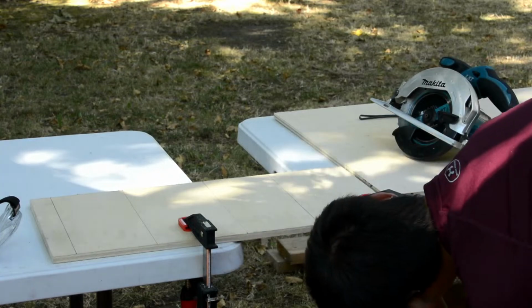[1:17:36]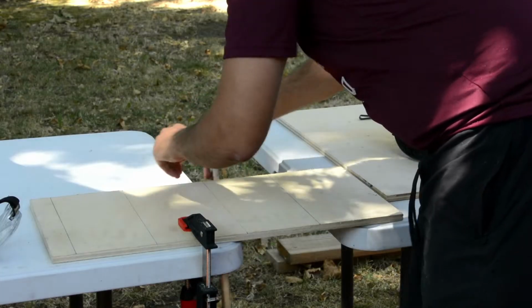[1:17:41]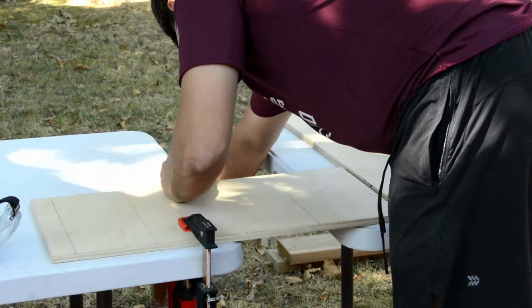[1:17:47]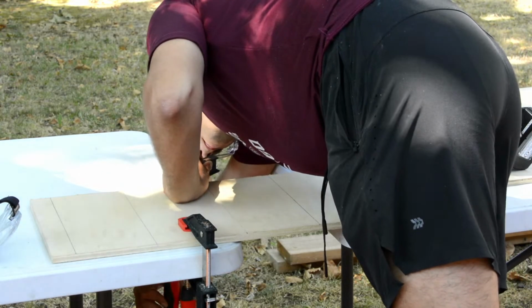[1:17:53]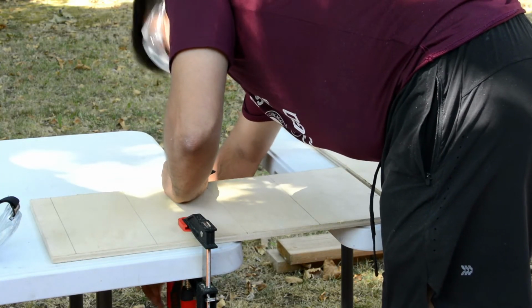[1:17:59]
Is that like Justin Timberlake? Definitely not Justin Timberlake. Oh wait, this is not gonna work. Suit and Tie by Justin Timberlake.
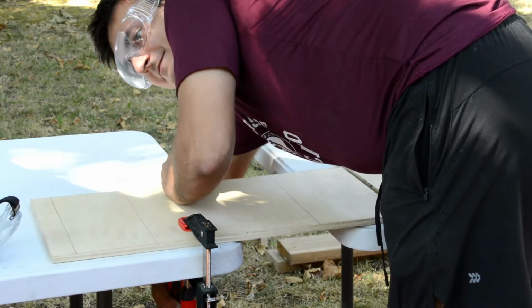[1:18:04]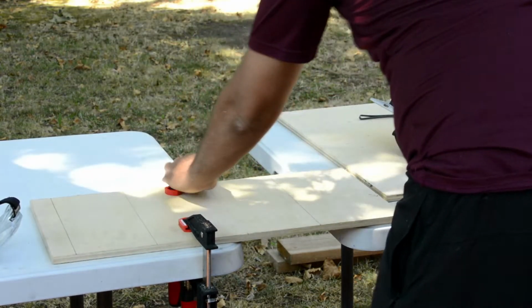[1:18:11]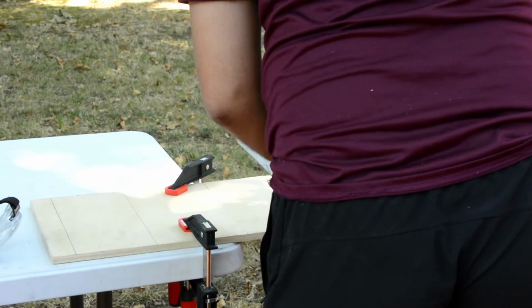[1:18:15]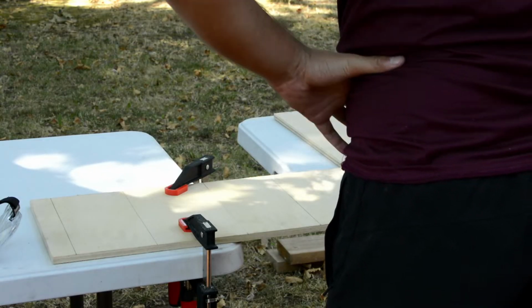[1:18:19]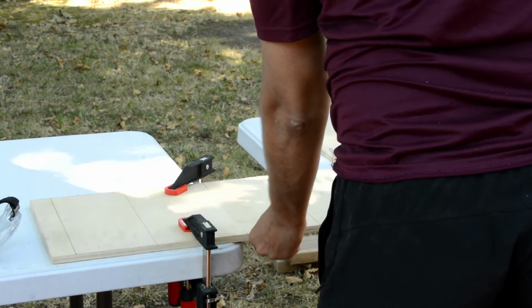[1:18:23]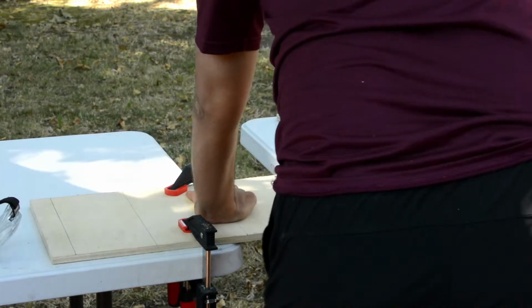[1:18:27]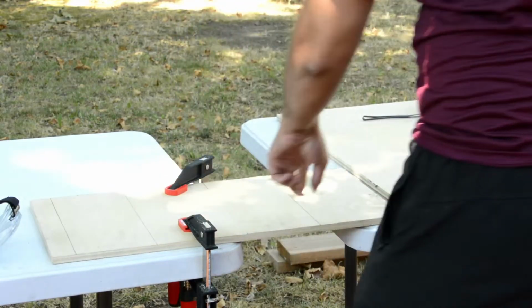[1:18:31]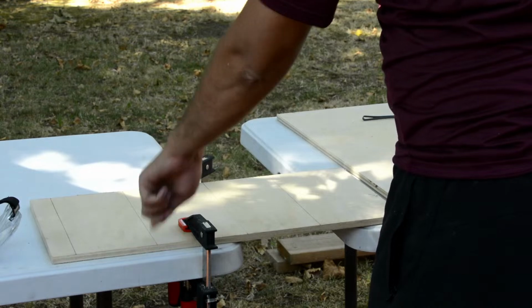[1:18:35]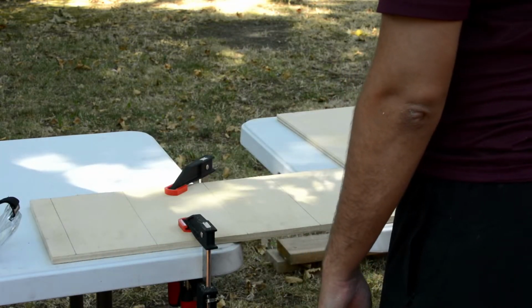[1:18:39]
But how's that other one gonna hold? Or you know what I didn't realize? I can't do this type of measurement. Push down a bit. I can't do this though. I'm gonna have to remeasure this because I didn't account for the kerf. So this is gonna be 1 millimeter short. This is gonna be 2 millimeters short, etc. Or something like that. So I'm gonna have to remeasure it.
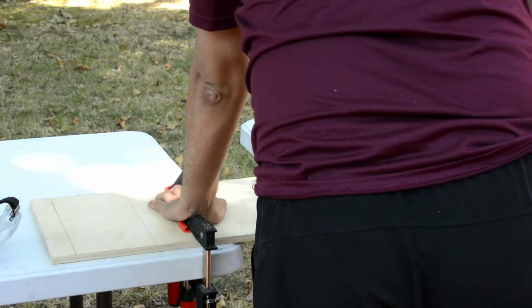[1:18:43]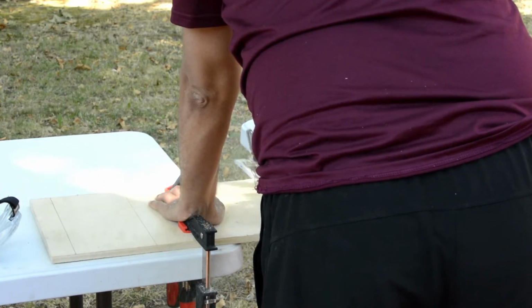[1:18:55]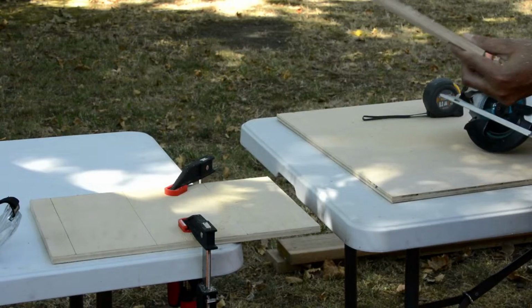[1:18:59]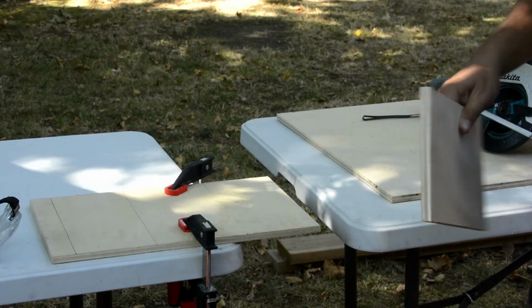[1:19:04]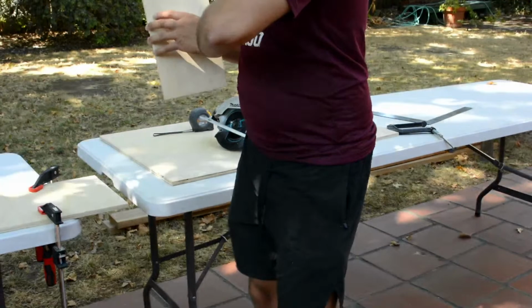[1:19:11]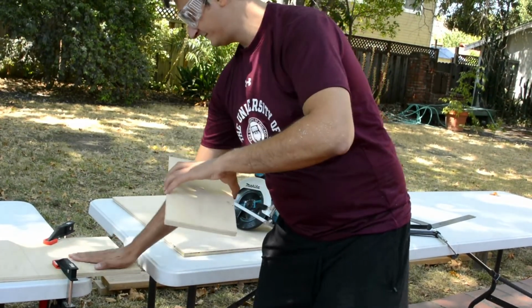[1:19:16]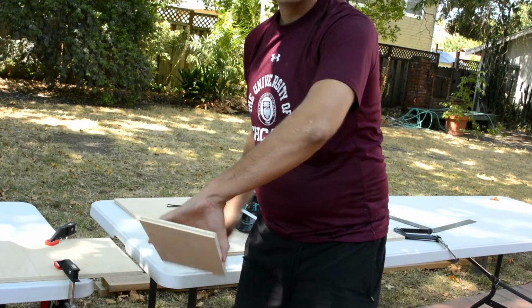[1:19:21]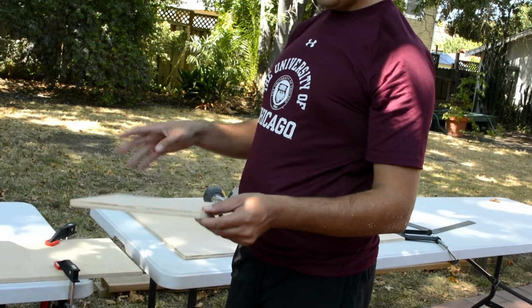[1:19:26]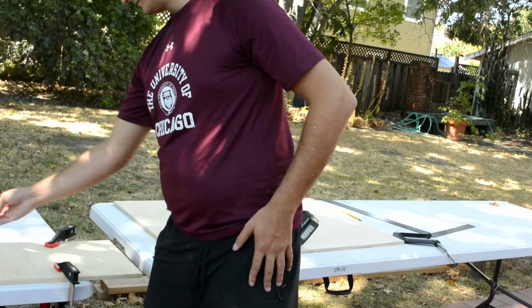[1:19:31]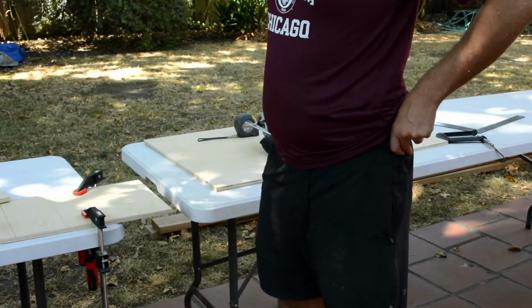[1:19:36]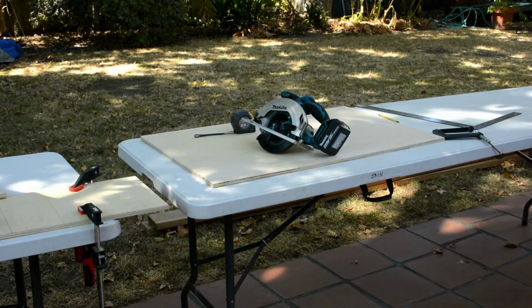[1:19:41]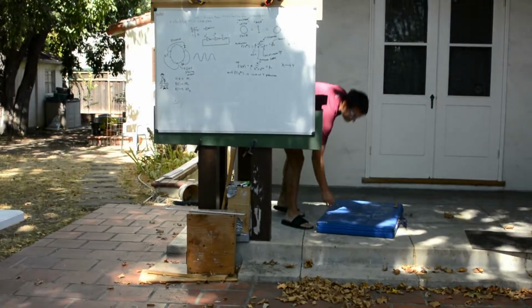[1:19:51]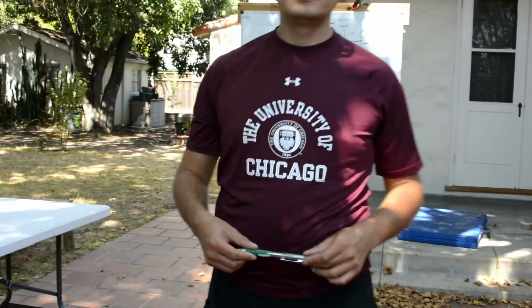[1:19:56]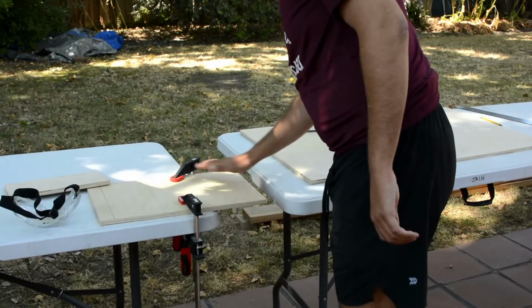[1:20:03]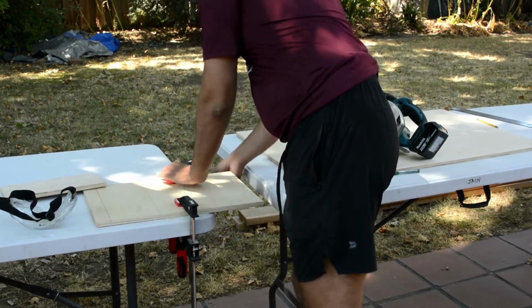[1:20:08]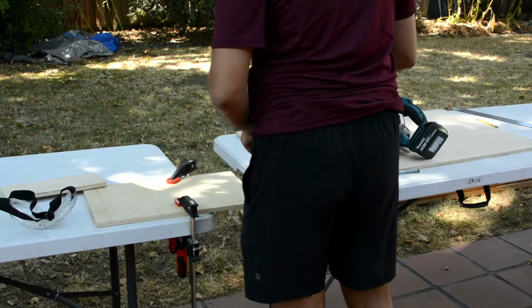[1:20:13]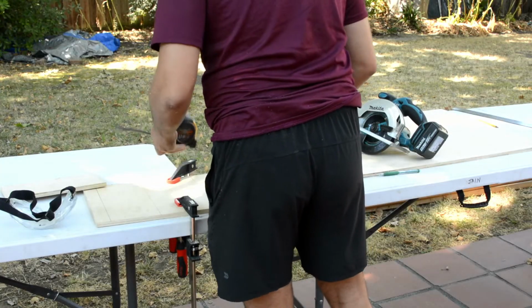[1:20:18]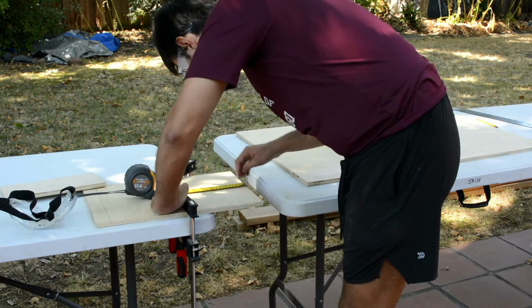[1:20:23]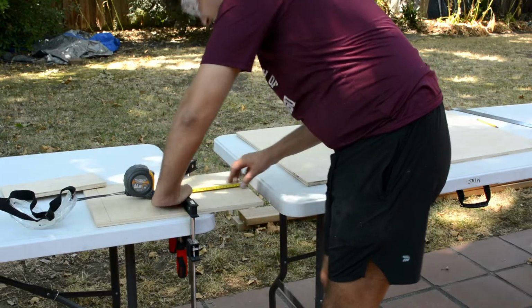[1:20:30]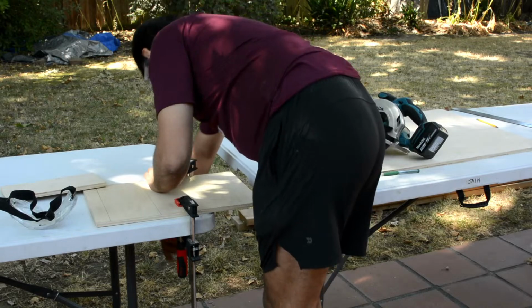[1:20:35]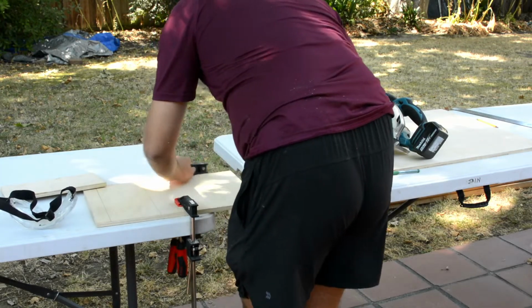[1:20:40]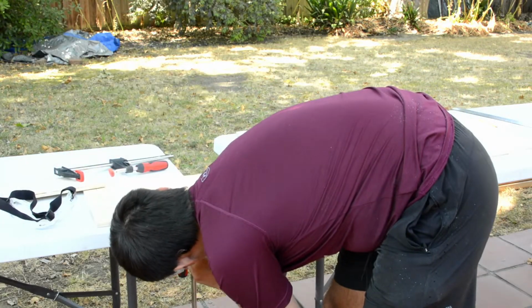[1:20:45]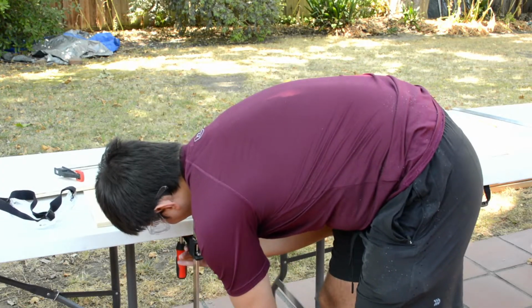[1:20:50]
Let me get my elbows crusty for the camera, obviously. Wait, hold on. It's not working. All right. So I'm gonna go get a big eraser because I need to erase all this. Let's measure on top. Okay, so this one needs to be 1. It's actually fine. For the table saw, man, we would have been done by now. I really like these clamps.
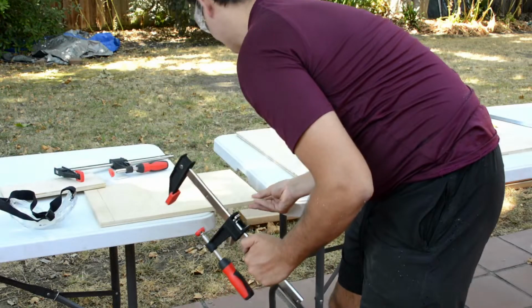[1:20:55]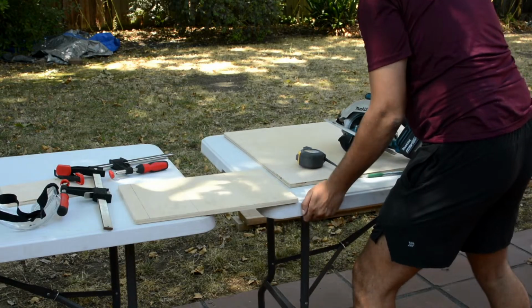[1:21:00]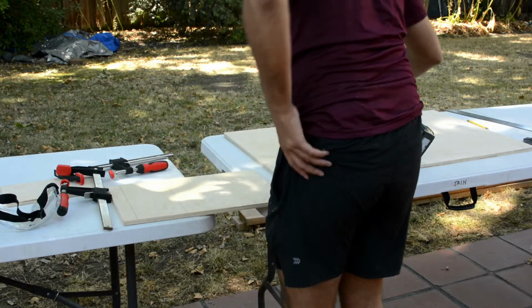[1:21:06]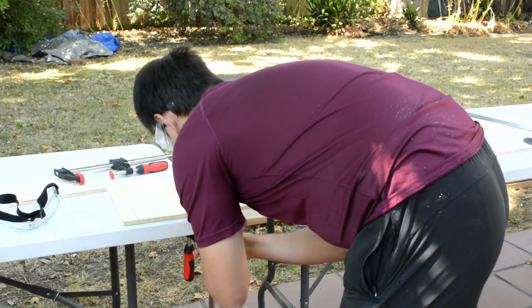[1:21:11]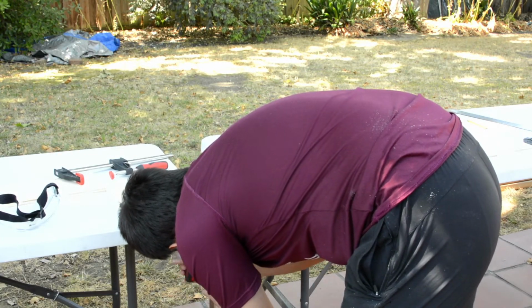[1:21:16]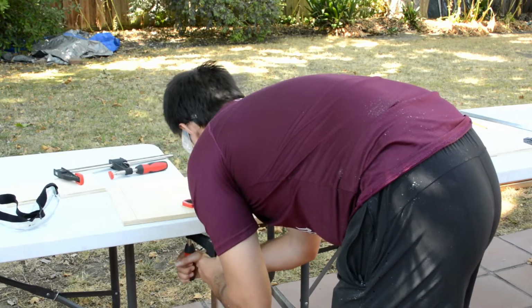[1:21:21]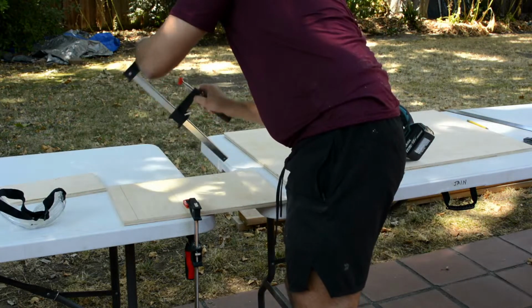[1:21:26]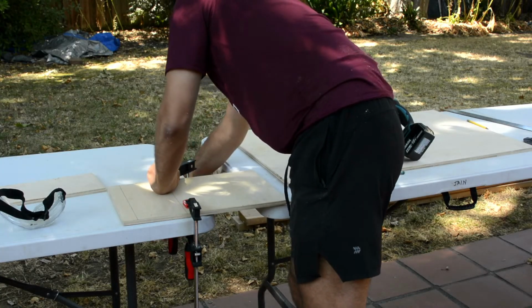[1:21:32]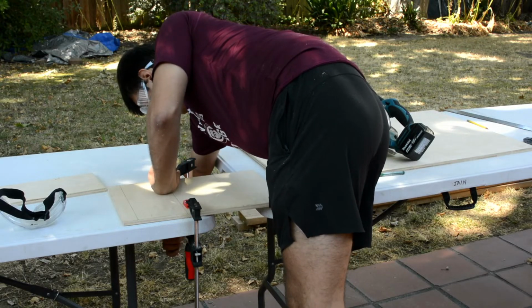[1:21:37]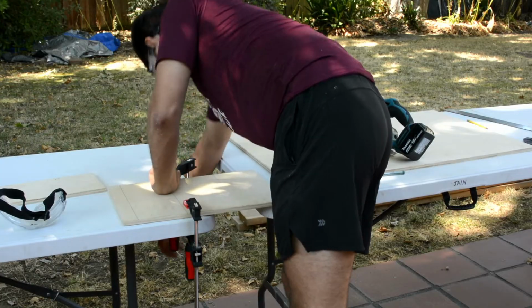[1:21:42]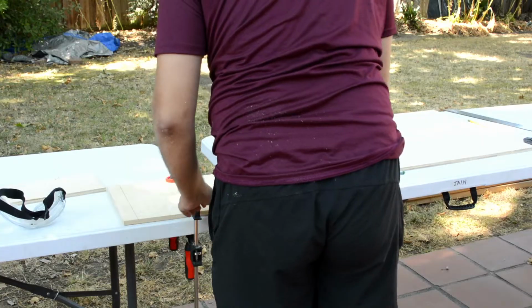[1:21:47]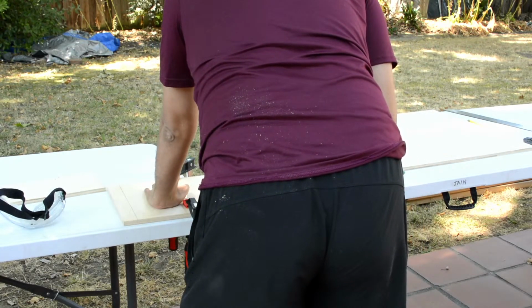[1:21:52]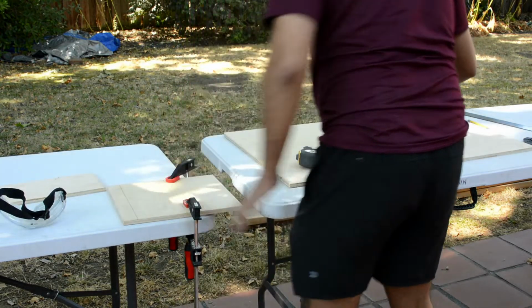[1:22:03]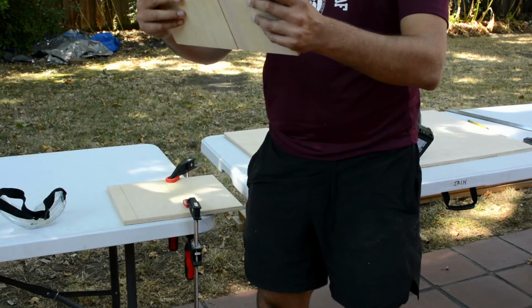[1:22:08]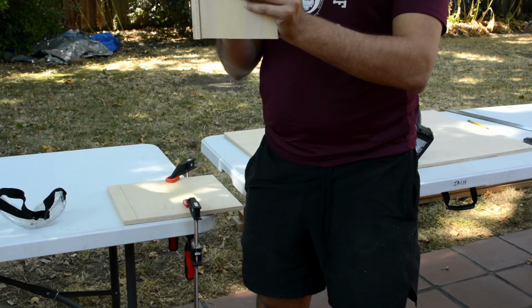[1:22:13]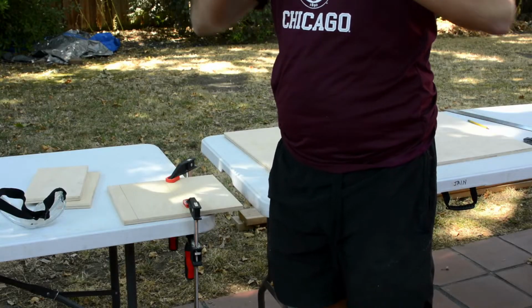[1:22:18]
So I bought this apparently light absorbing matte felt that we're gonna take. It's adhered to the inside of the box.
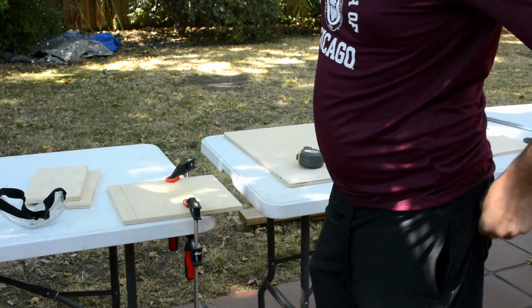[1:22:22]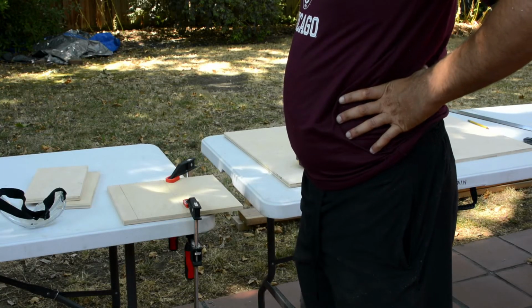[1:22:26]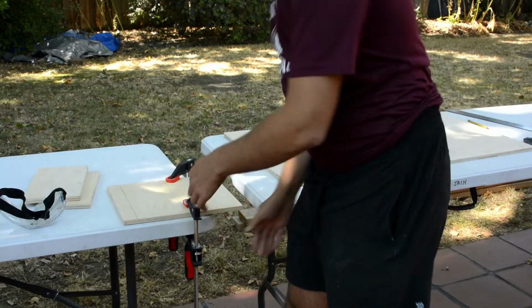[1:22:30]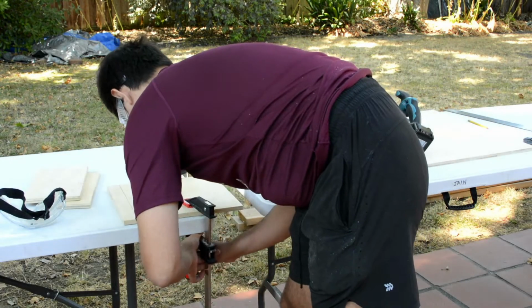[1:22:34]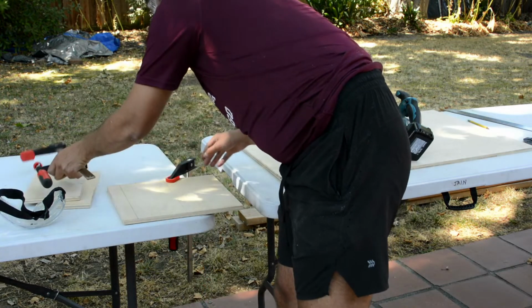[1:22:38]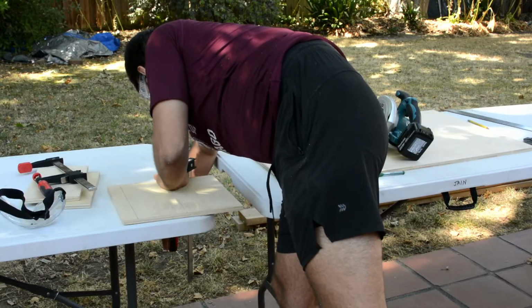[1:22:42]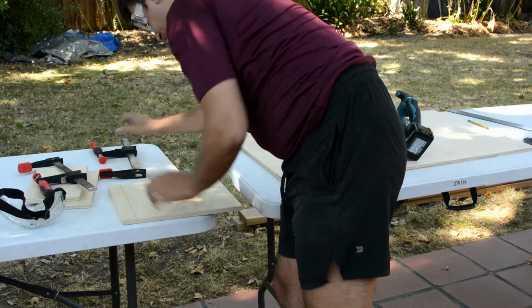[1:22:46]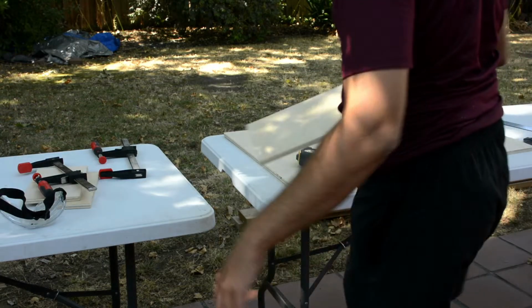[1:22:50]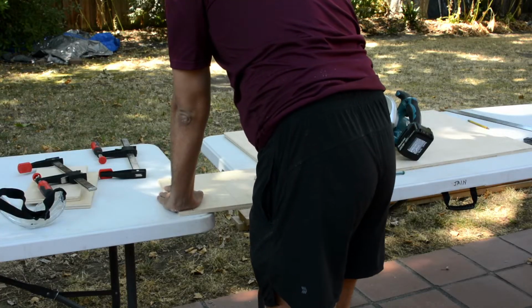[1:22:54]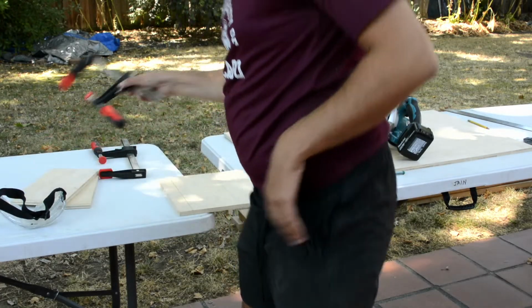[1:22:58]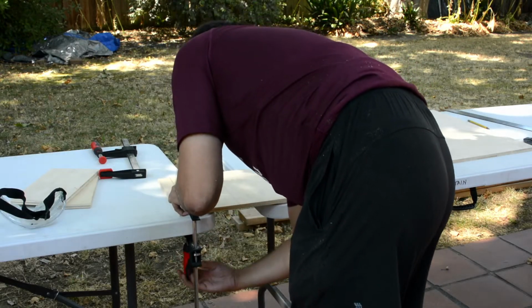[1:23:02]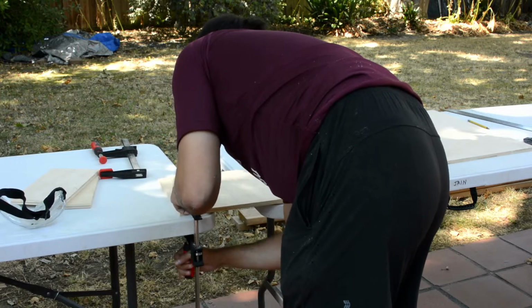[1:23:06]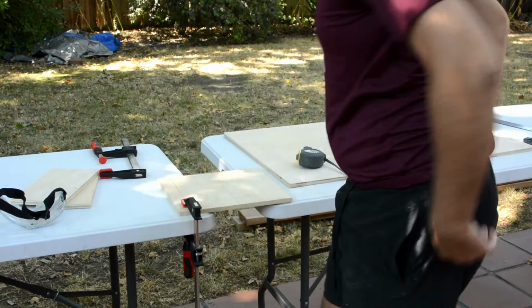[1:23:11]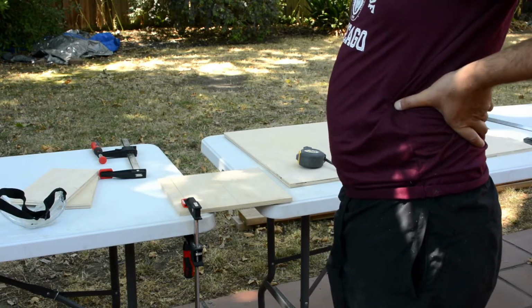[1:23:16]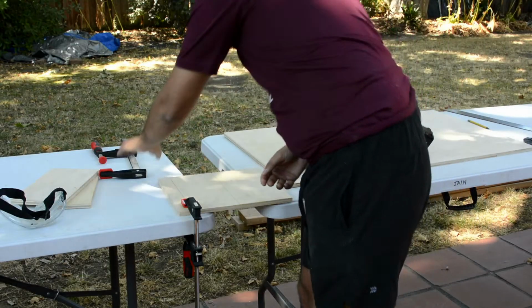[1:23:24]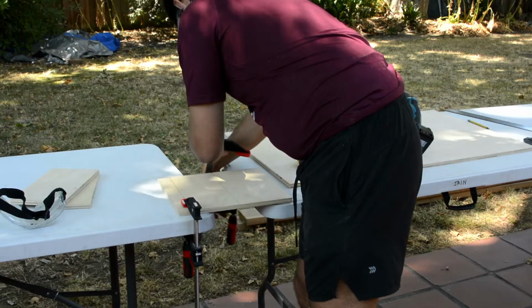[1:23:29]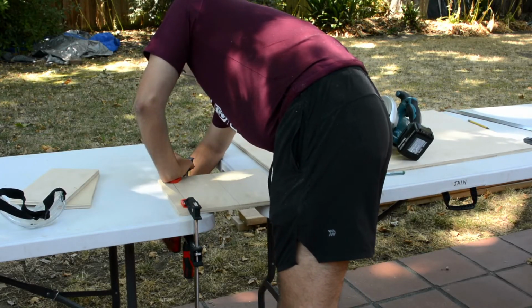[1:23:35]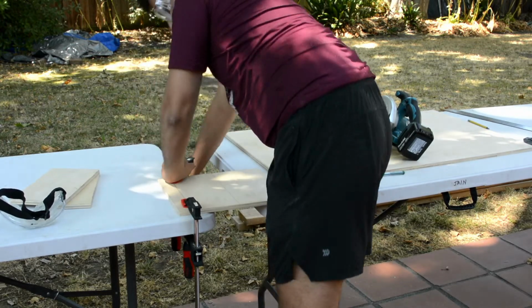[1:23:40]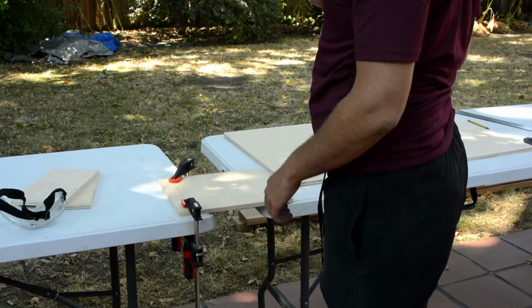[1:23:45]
I wish like Spotify, like you could search the lyrics. You know? What are the lyrics? I'll hit you right back.
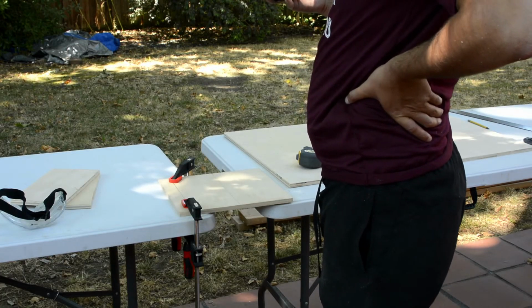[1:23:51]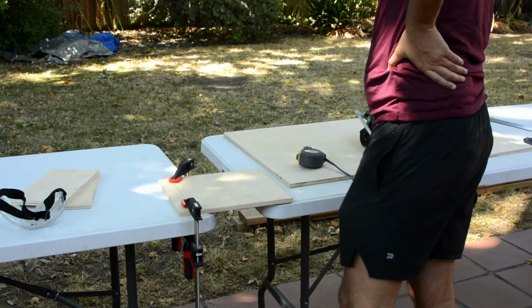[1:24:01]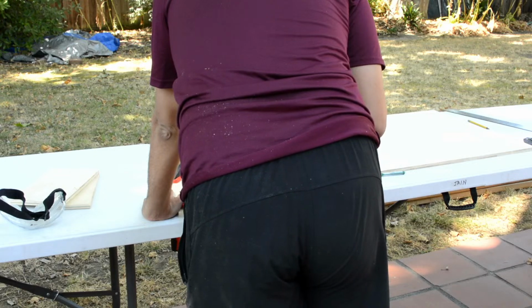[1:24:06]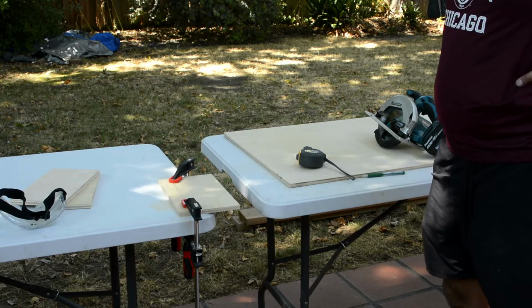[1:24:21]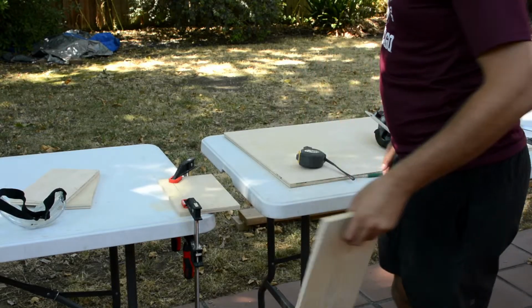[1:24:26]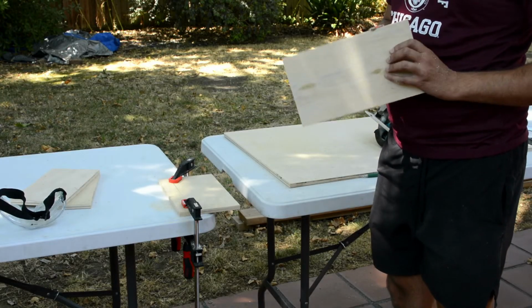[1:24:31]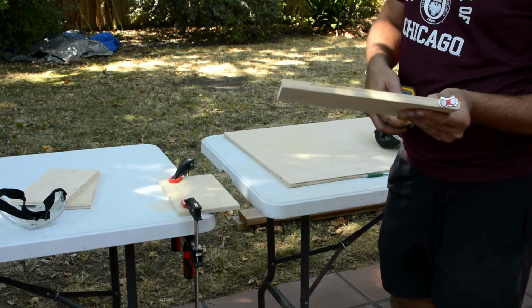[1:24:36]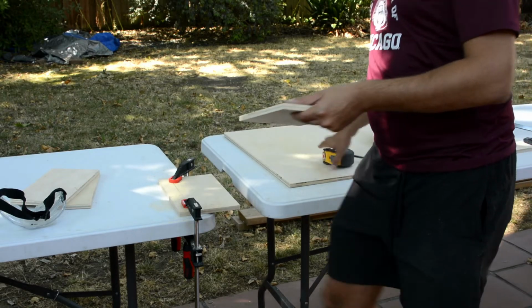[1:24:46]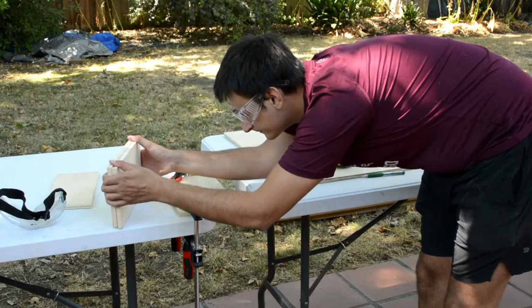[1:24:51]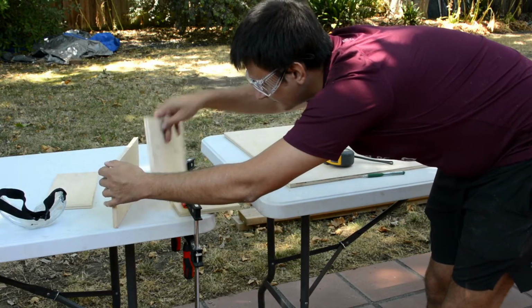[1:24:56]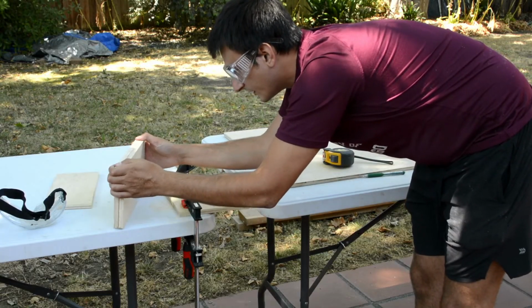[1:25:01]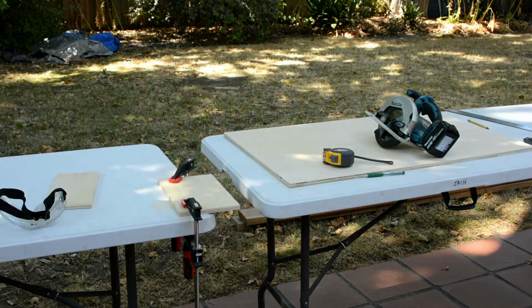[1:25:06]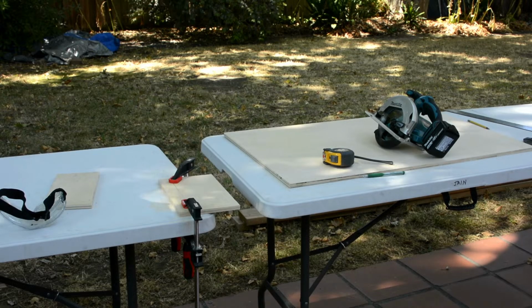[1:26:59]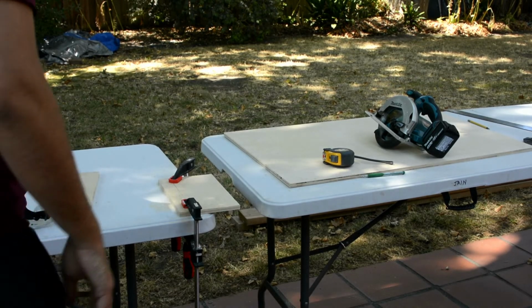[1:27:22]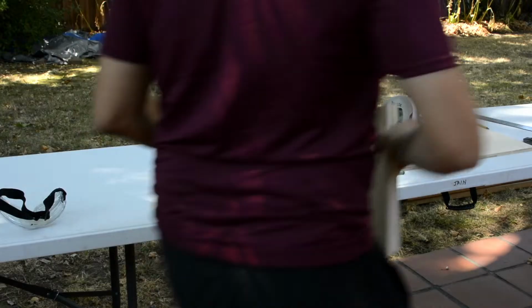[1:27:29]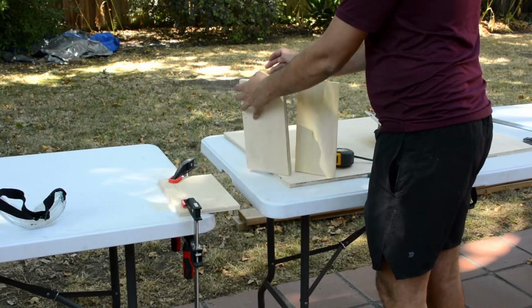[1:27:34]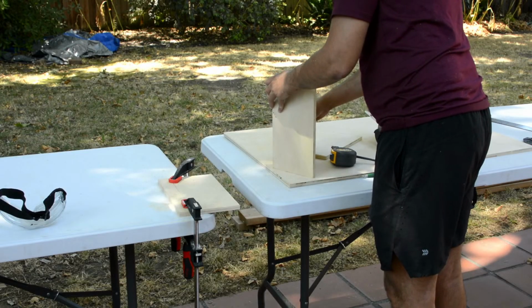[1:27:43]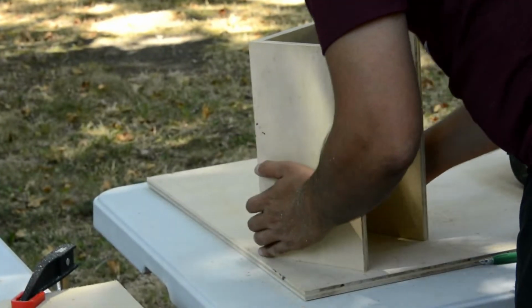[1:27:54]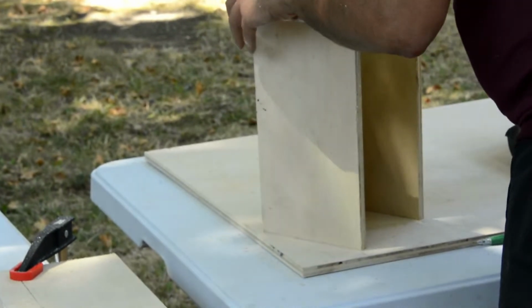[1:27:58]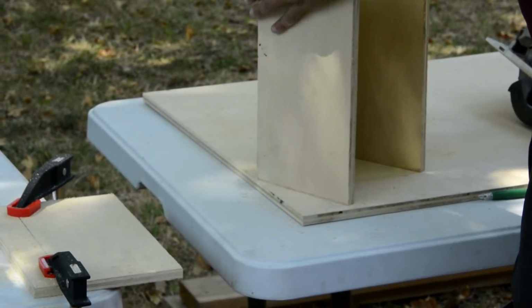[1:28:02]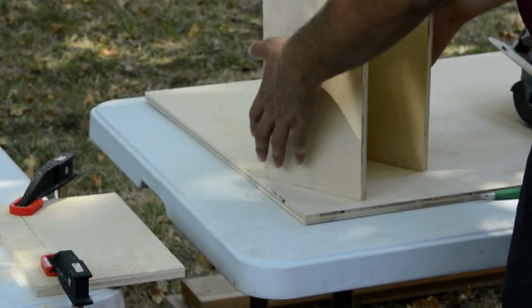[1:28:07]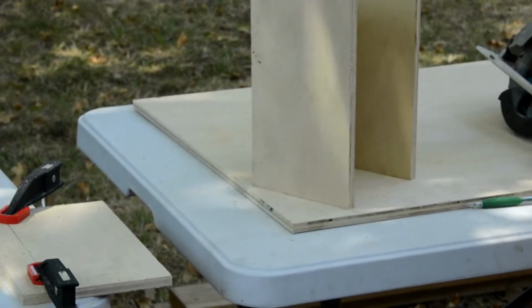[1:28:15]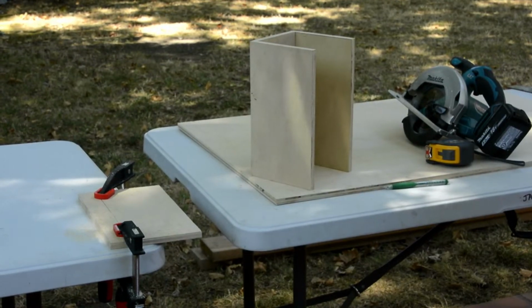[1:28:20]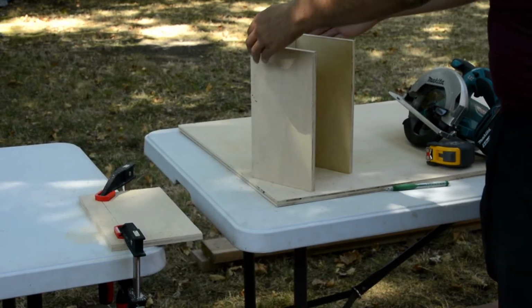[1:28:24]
Basically gonna be like this. I don't think it's fine. I mean, with the felt inside.
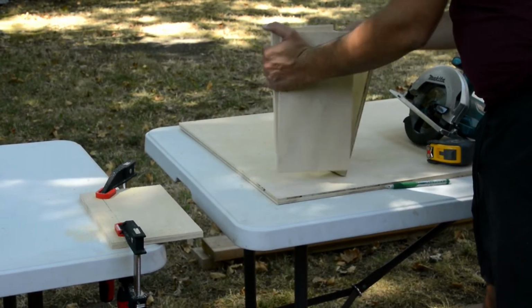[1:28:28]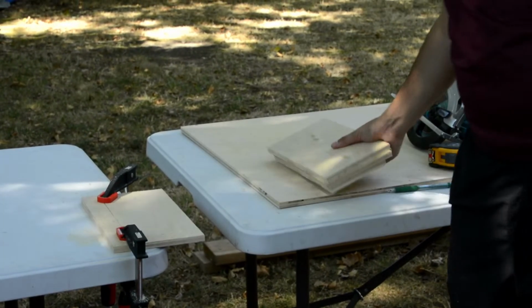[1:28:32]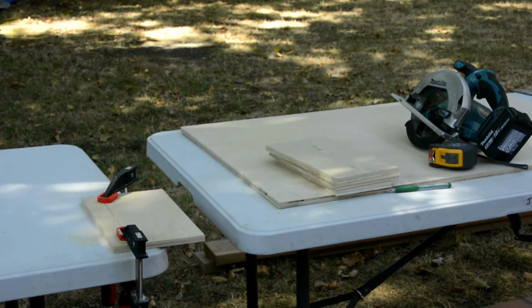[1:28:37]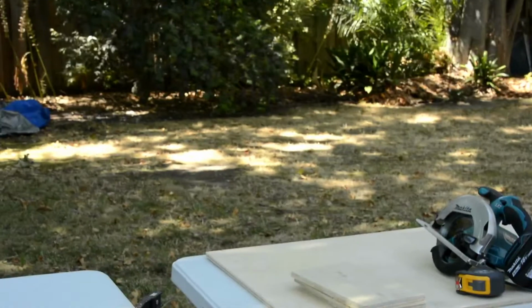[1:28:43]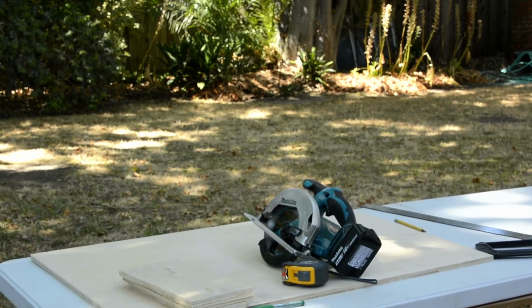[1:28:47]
How do you unlock this? Make it go up. Okay, so they're all worms. Or not worms, but this is like this. But be careful because it'll slam down. You gotta hold on to it.
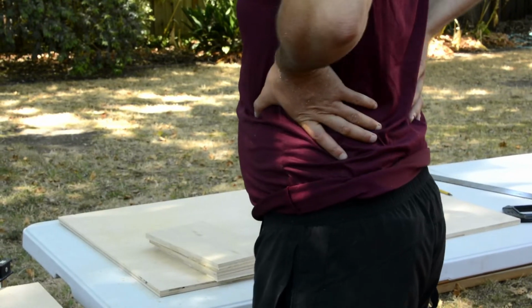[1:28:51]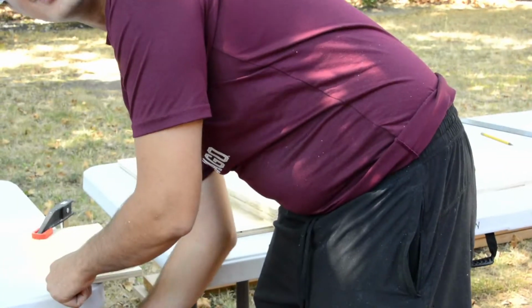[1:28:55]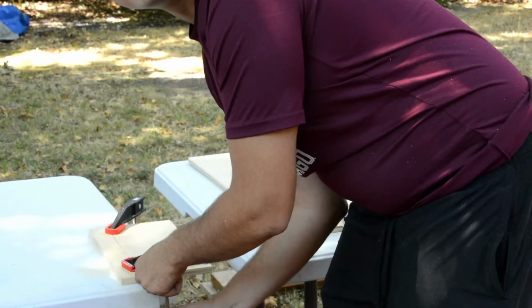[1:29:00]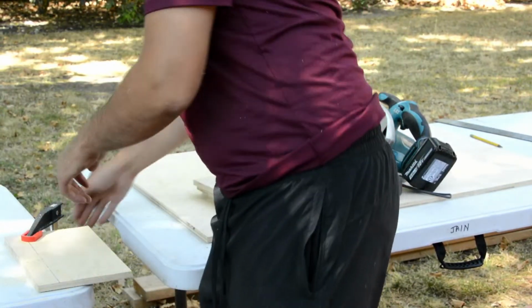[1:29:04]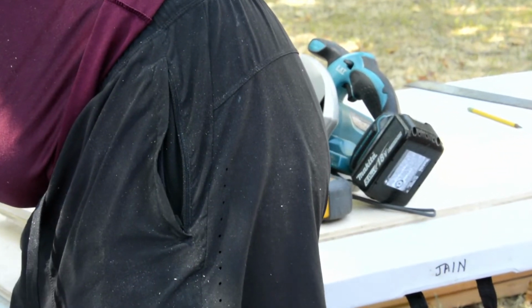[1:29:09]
Because you know I looked at the cost of that lens. Do not believe how expensive that lens is. 1,300. Yeah, it's like $1,000. I was shocked though. I was like, what?
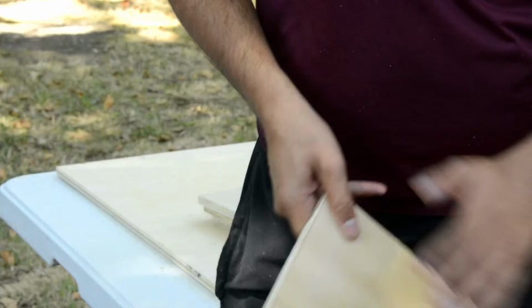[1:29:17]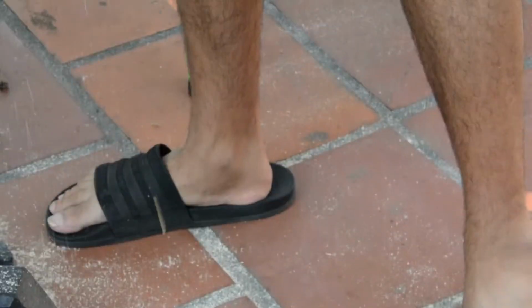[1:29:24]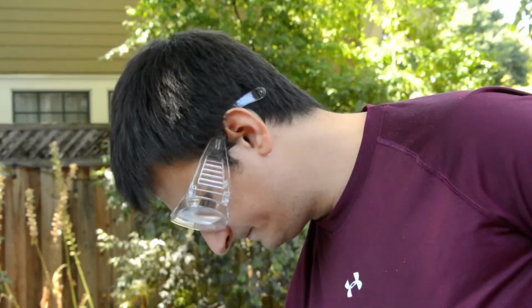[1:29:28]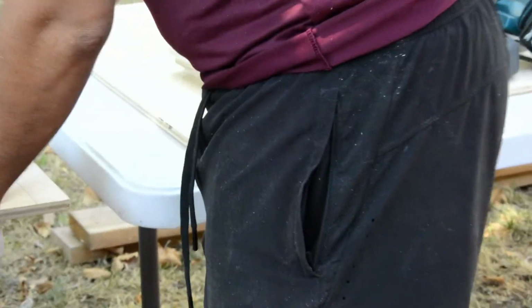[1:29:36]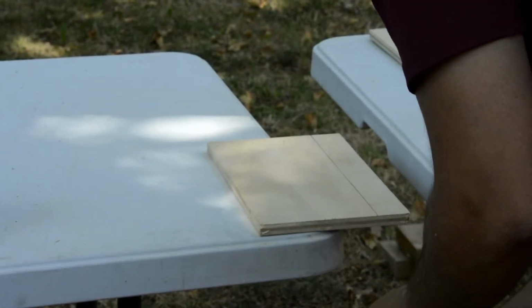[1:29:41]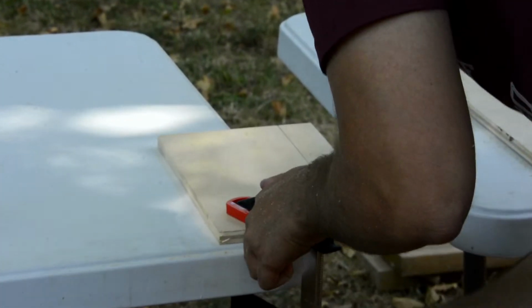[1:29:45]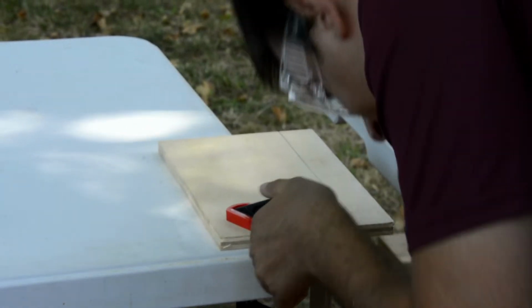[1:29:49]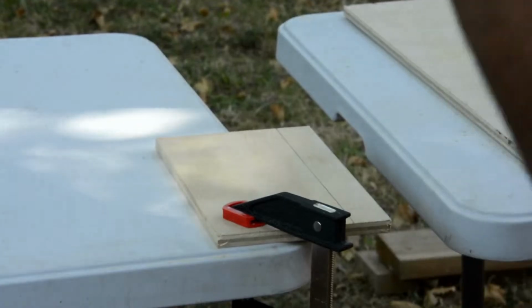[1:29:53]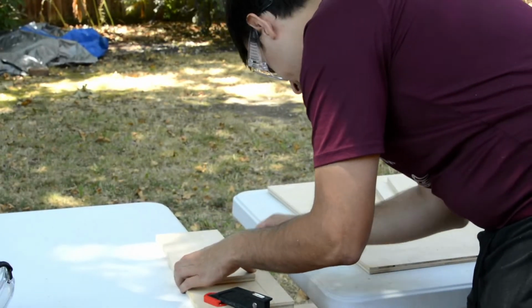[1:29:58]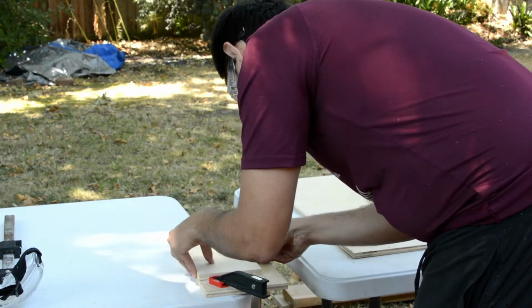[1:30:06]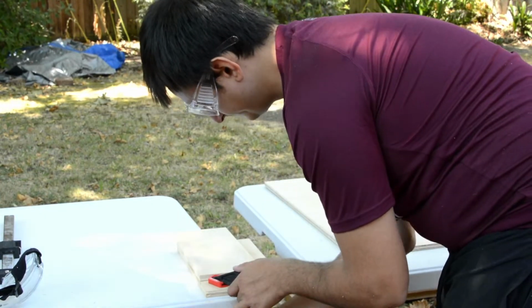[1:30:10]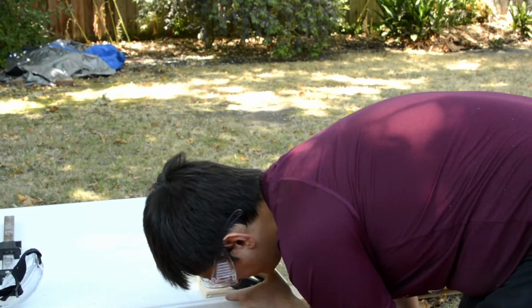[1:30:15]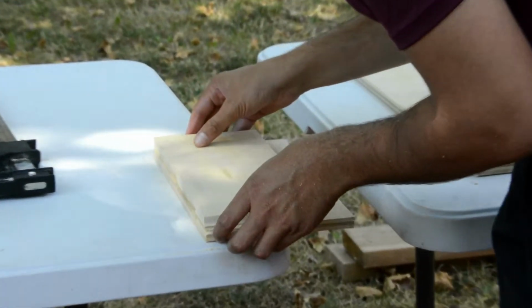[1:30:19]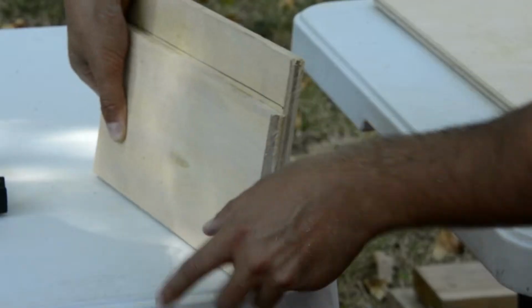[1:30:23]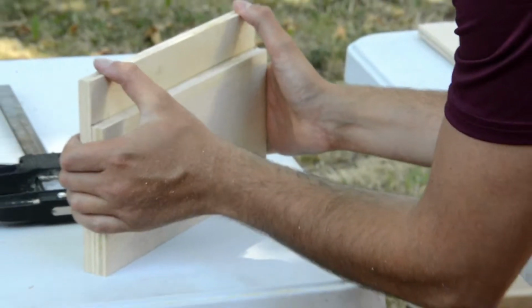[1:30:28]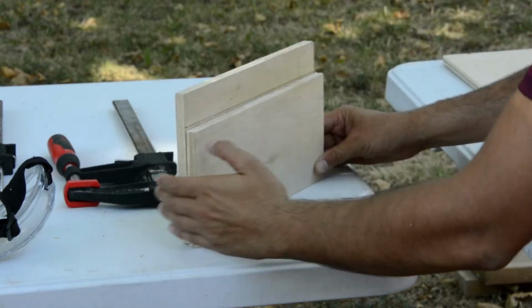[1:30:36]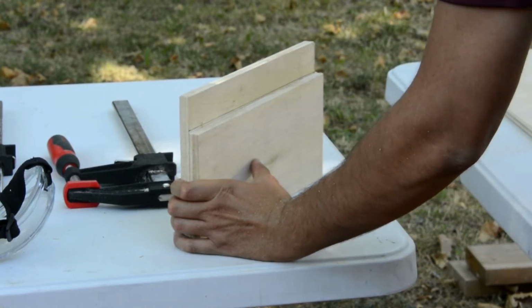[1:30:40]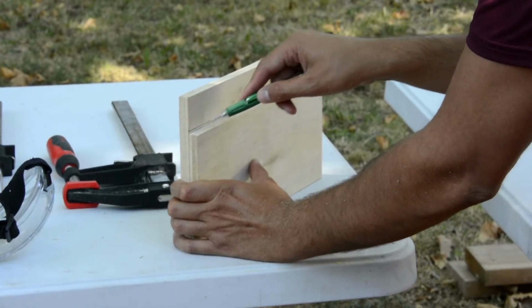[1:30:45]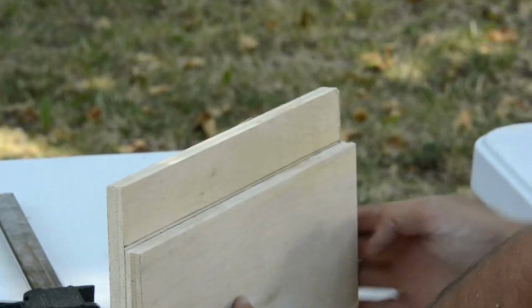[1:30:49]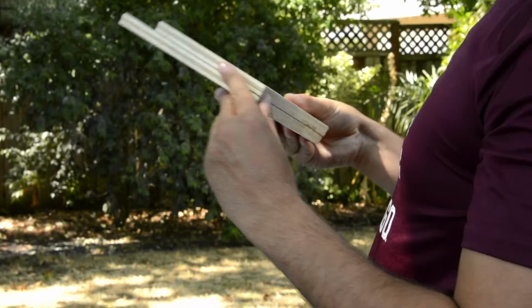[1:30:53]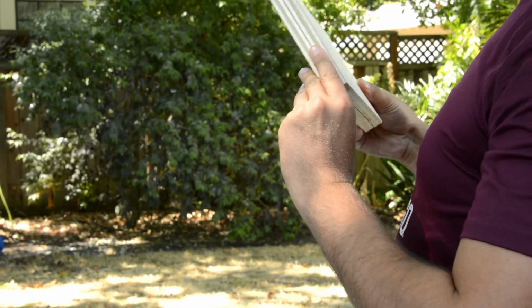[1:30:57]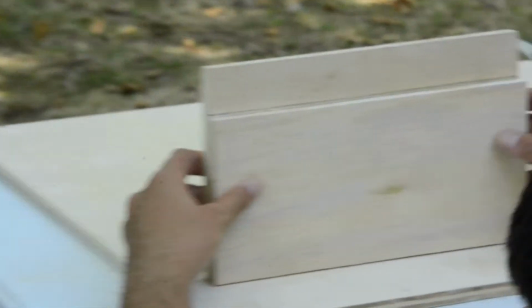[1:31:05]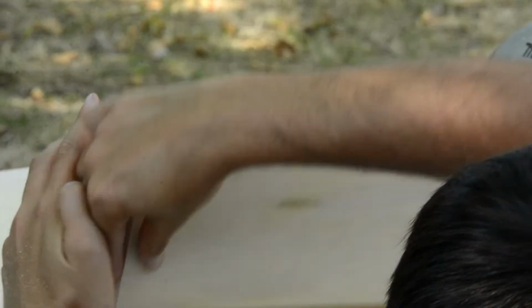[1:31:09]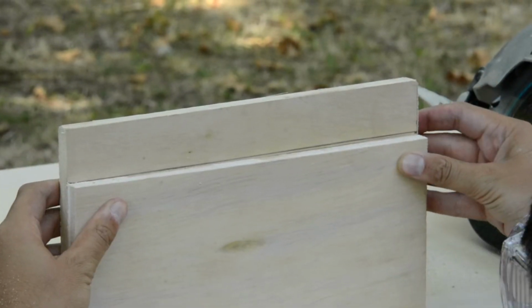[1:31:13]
Maybe that's the better strategy to get things kind of. Oh, but wait, actually that was wrong. I need some. Oh. I think it's because this thing is kind of bowed. Yeah, I'm gonna cut it from the other side.
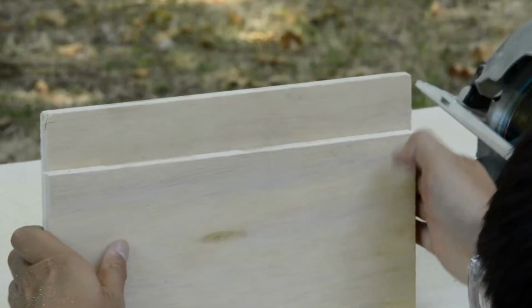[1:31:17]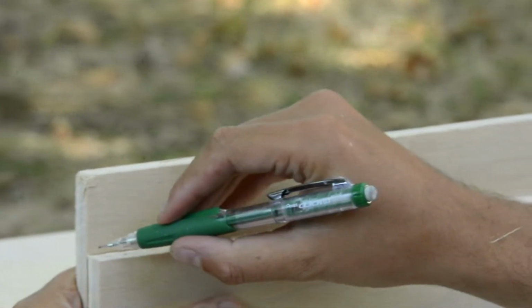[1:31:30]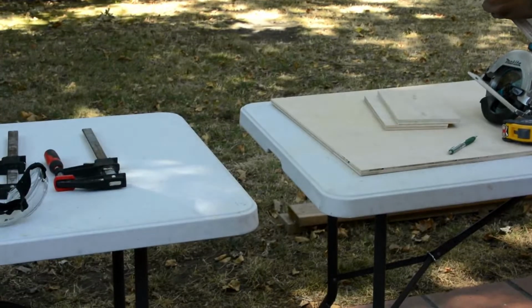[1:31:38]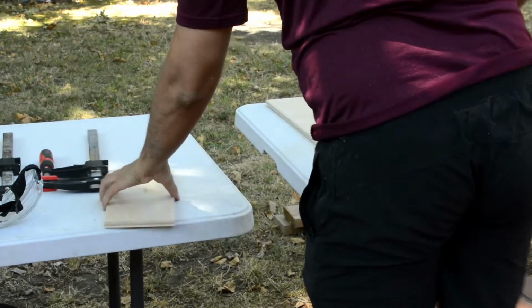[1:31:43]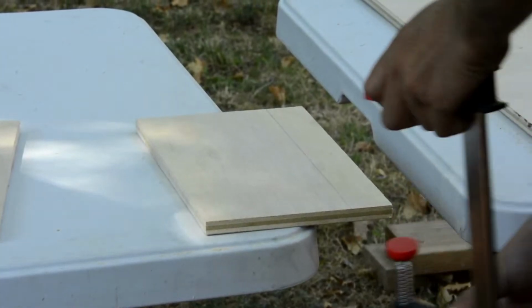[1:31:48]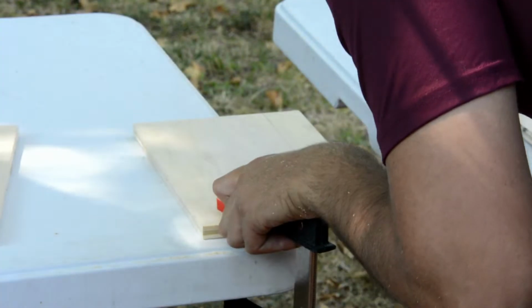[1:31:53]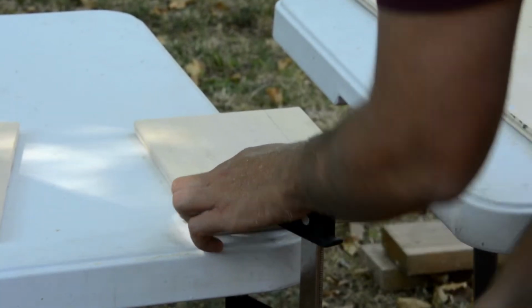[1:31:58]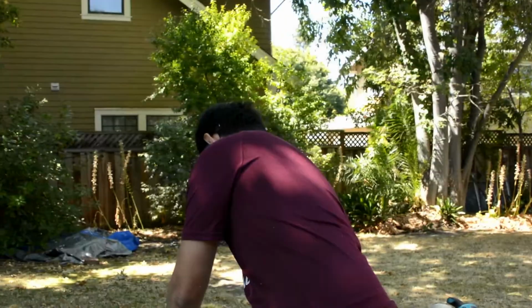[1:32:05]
It's all for the learning experience, you know? It's like, it doesn't have to be perfect. Mhm. Wise words from a wise man.
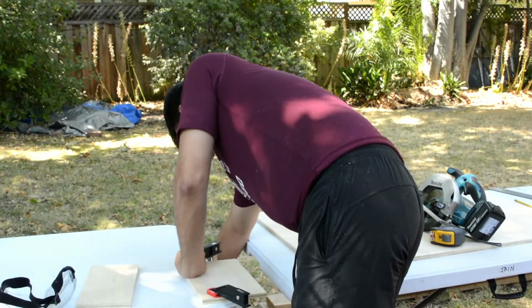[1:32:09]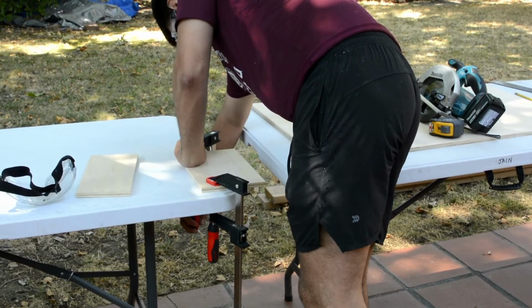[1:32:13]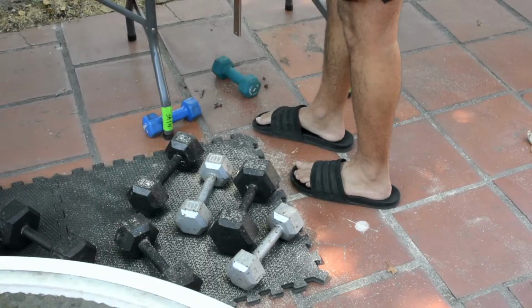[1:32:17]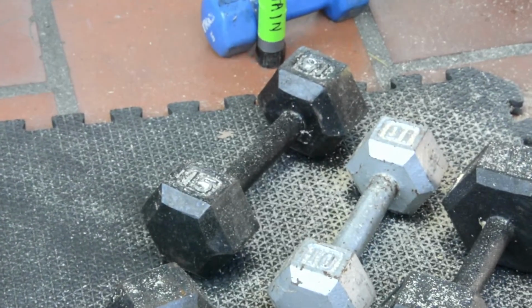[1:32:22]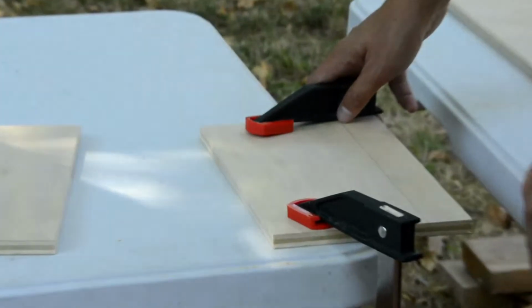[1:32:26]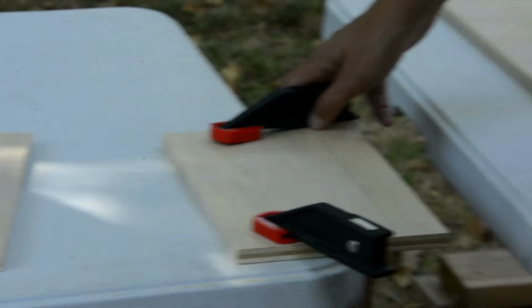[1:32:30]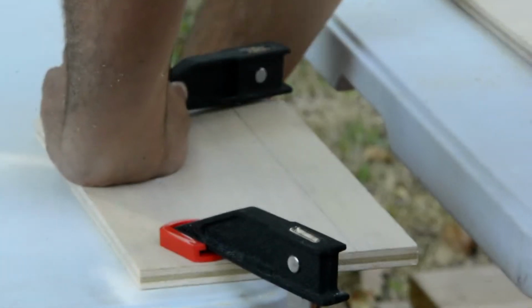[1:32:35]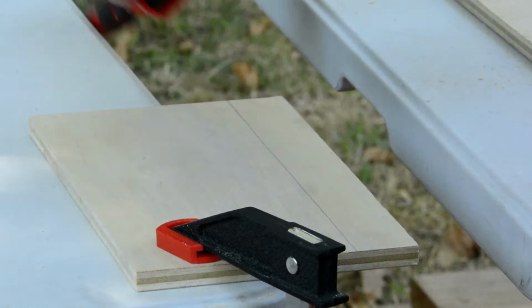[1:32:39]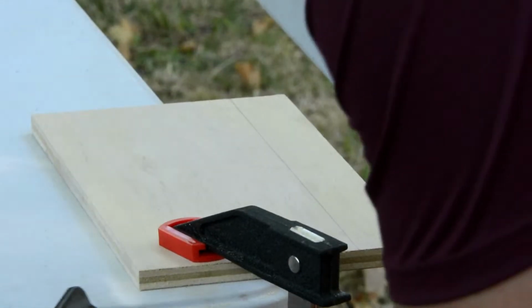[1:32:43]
Ooh, I don't know how I'm gonna. Look at your weight. Yeah. I think. You don't know what. Trying to figure out how I'm gonna cut this. I think I can only use. Maybe if I can get two on there, but I can't.
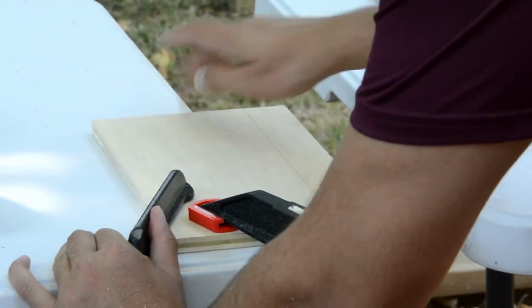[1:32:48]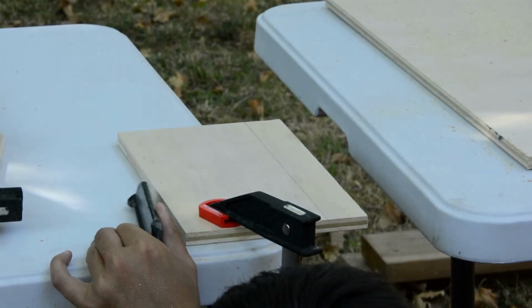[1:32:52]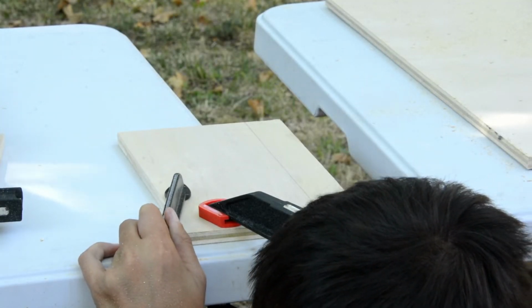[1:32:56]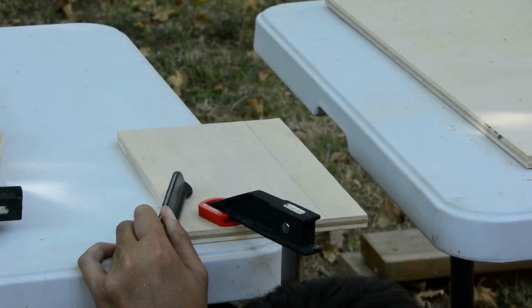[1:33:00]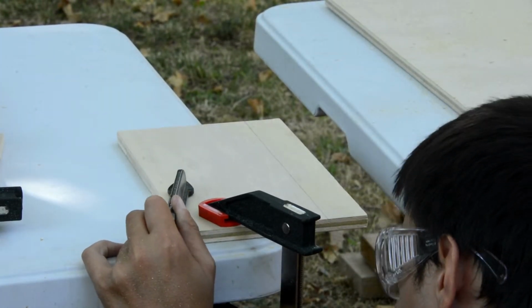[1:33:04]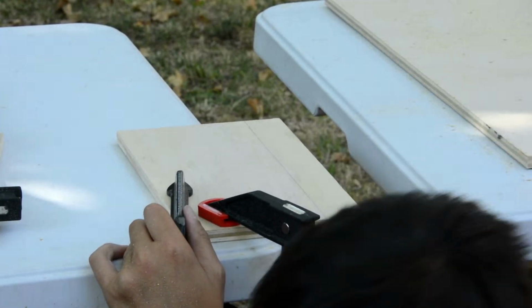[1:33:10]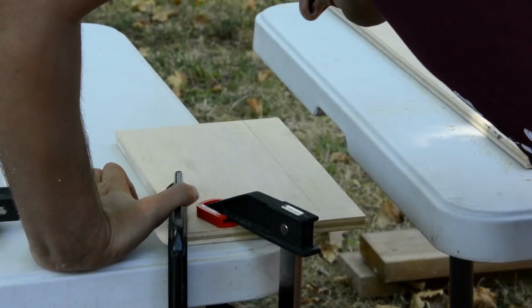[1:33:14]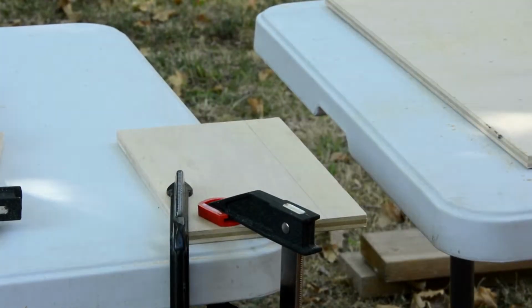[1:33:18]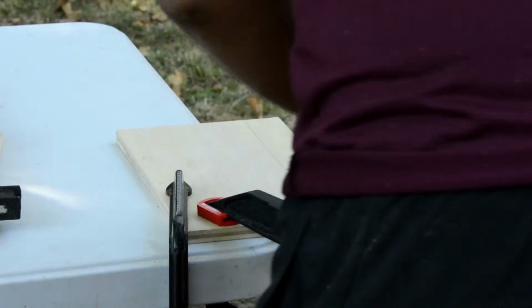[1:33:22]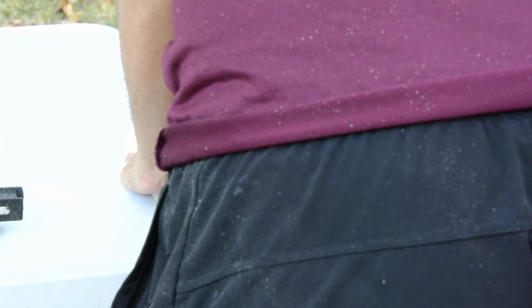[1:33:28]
I didn't even know what the fuck I'm doing. I never know what I'm doing. Story of my life. Stop, get copyright strike. Sounds too much like the original. I only said like 3 words, so fair use, fair use. 4 words. I am alive.
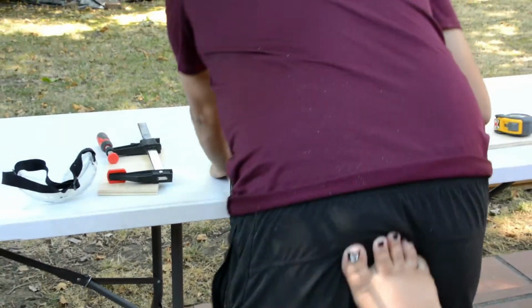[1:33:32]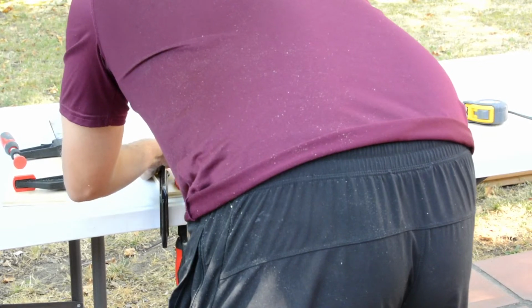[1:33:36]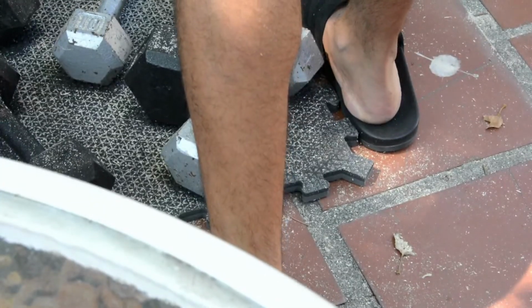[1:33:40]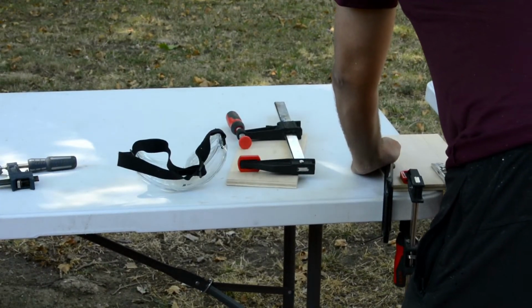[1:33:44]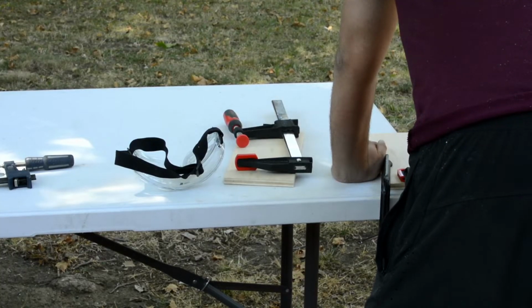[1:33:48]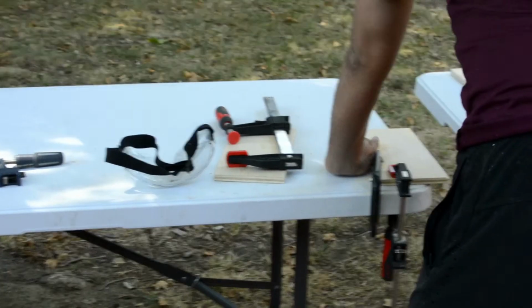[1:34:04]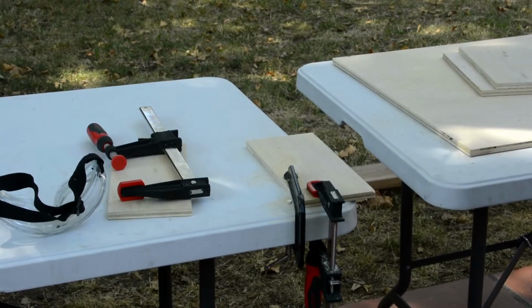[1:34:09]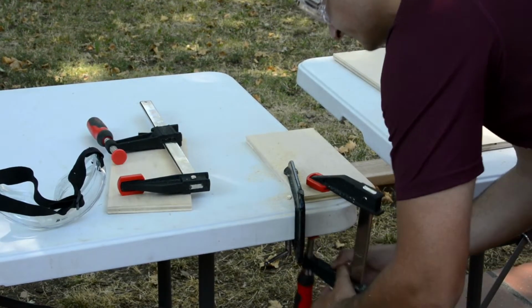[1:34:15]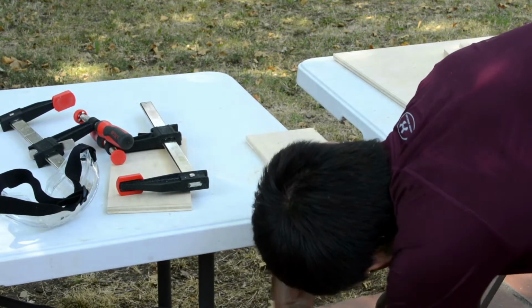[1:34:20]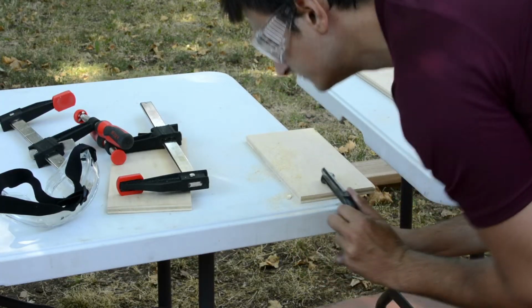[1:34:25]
Oh, did you? You need to do it? Yep. You need to fix it. I think we could potentially touch it up with the bandsaw. I've never used it. I don't think anyone's ever used that bandsaw. I got a lot of ass pics frames I'm pretty proud of.
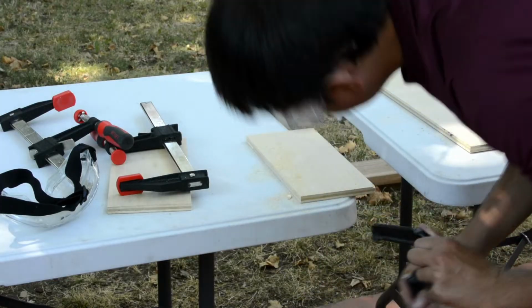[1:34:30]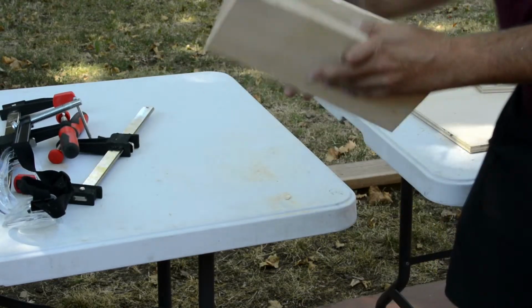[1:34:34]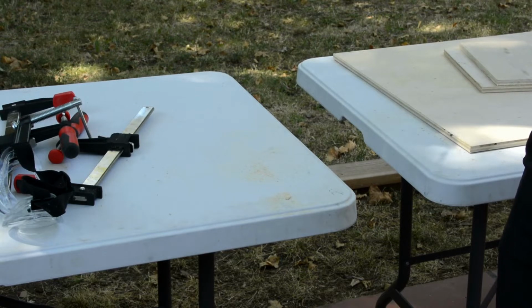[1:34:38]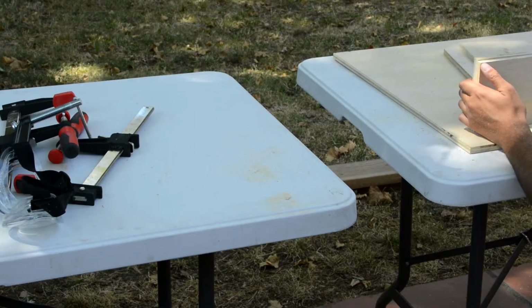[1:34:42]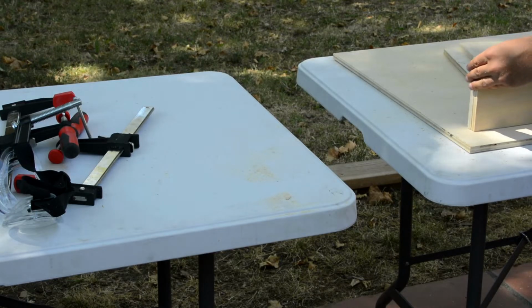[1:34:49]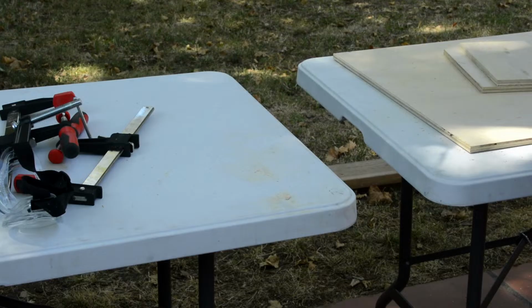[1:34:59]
The reason why it's annoying is because the wood glue only really works if there's a good bond. So if there's a gap, it just doesn't work. Okay, so the way that I was thinking about doing this is that we would. What's the length supposed to be, or the width? The thickness of the wood? The width. This way? What's the measurement? The one that you fucked up. Oh. Wait. This is supposed to be.
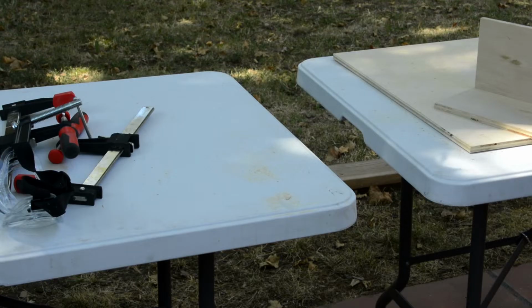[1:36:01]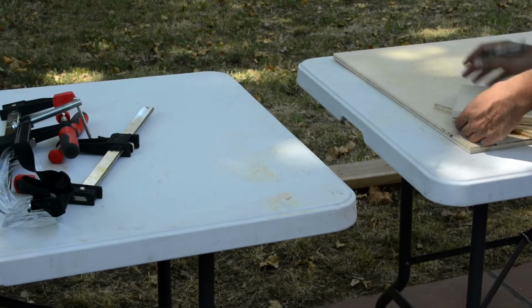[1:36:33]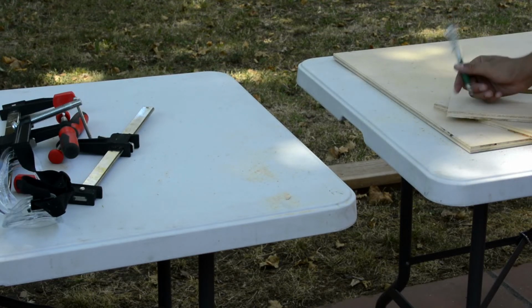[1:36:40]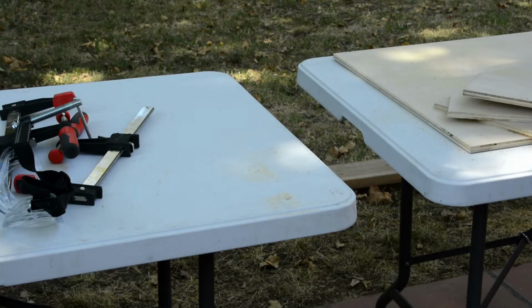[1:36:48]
Back on. I mean, we could just start over again. No, I want to at least get the glue in and attempt this. Are you using the rest of that wood for anything? No. Oh. We definitely can do it again. I'm not against doing it again. I could do the cuts again if you want to start gluing that stuff.
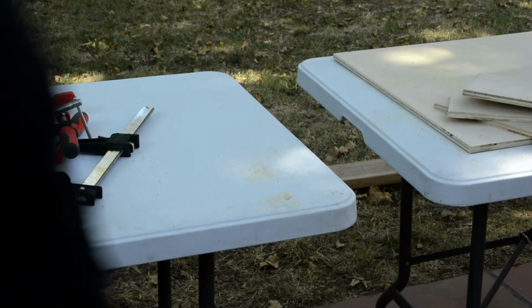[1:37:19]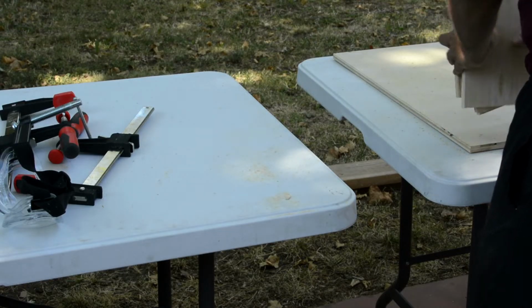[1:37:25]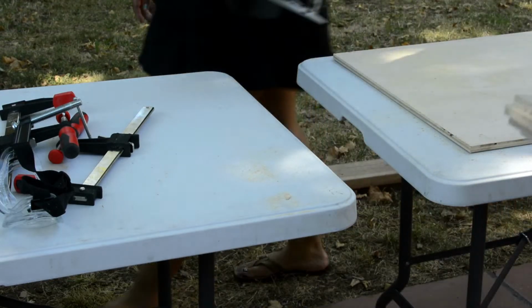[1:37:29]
Yeah, the issue is that this one is like way on both sides. This one's under. I think I want to do that. I think you can do it. Okay, well then. Okay. So, let me write down the cut list.
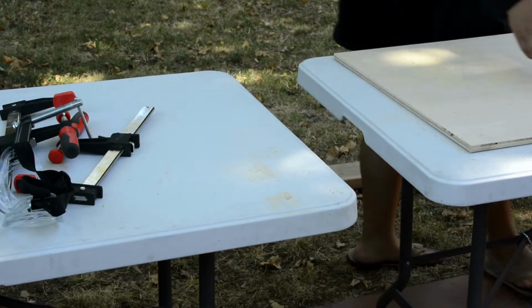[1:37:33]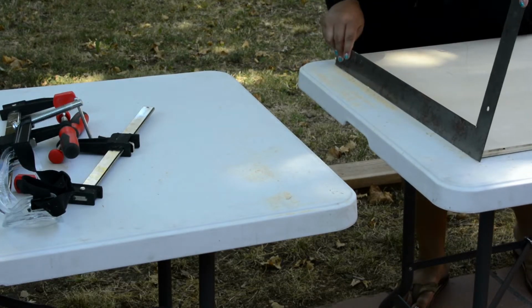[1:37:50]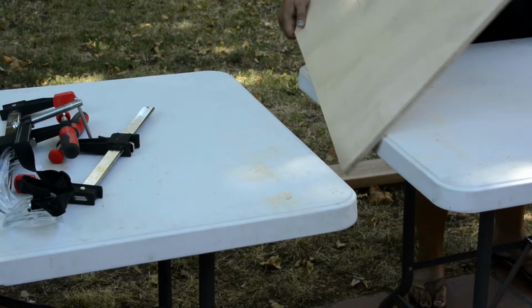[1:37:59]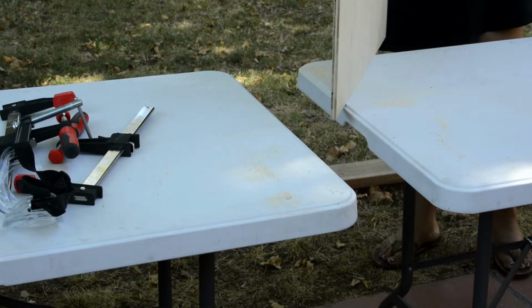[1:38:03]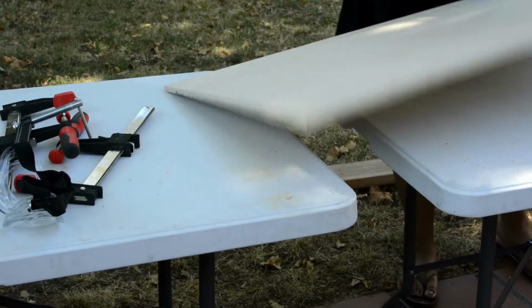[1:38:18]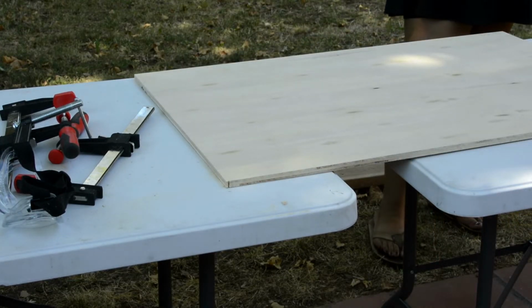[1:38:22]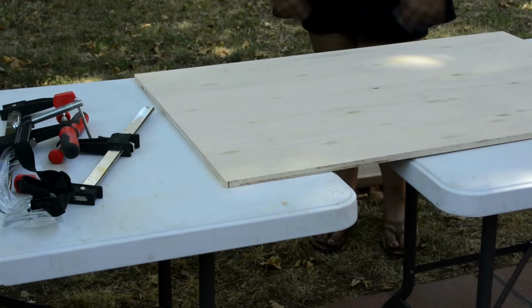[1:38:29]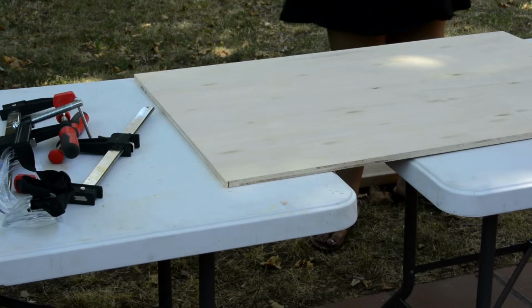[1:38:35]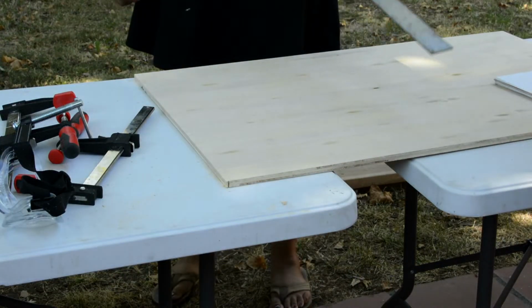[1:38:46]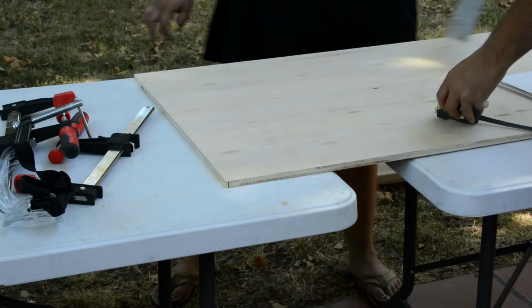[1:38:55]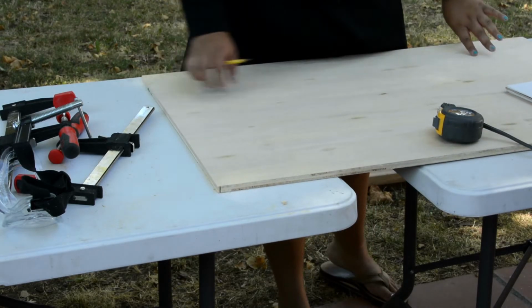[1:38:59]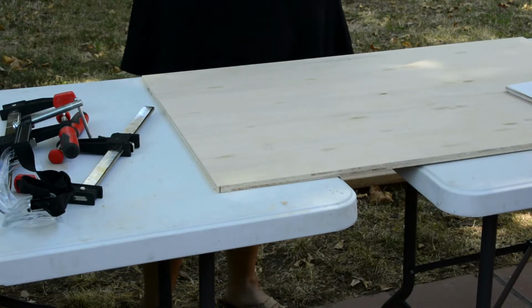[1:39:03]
Okay, I didn't draw it to scale, but these are the cuts. 275. But that's not metric. So, what did you do? You really take metric. I made 2 marks and then drew a line. But I don't know if that's the best way to do it. 1275. Oh gosh.
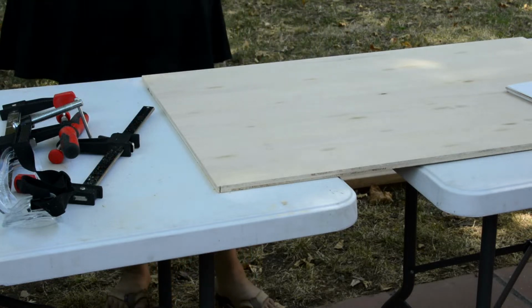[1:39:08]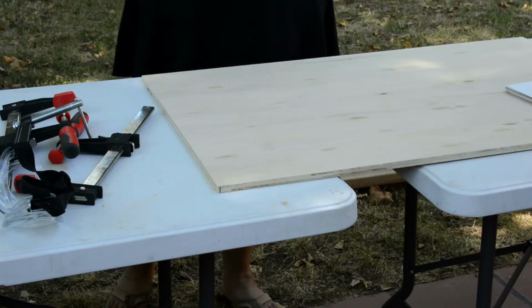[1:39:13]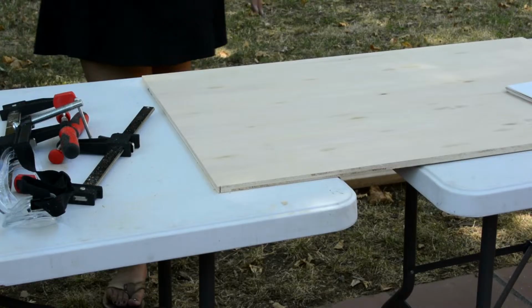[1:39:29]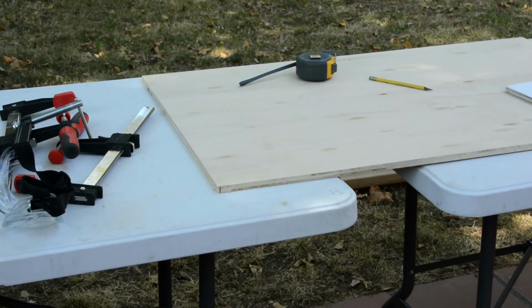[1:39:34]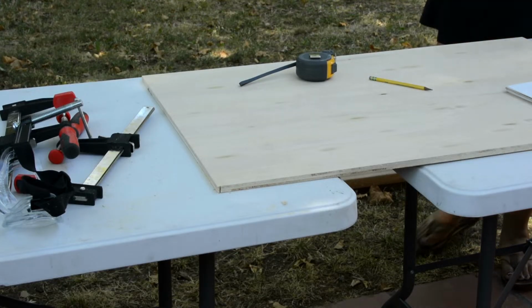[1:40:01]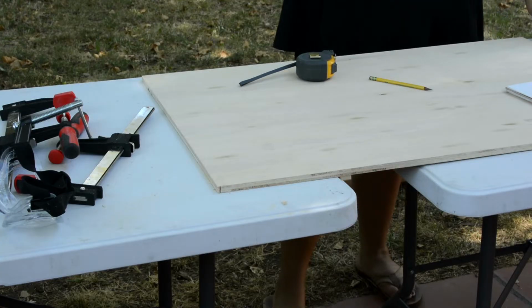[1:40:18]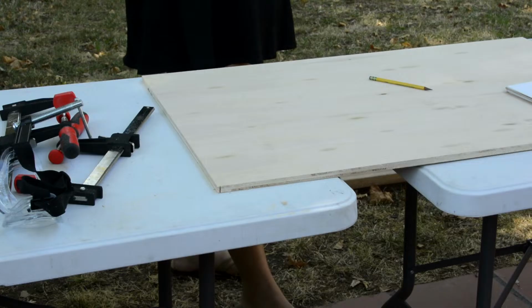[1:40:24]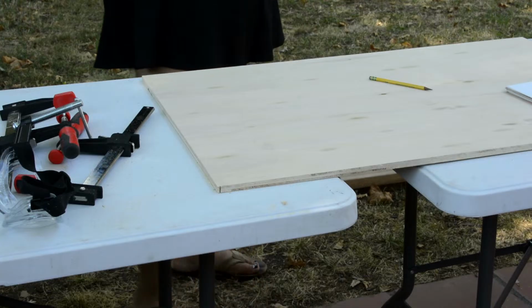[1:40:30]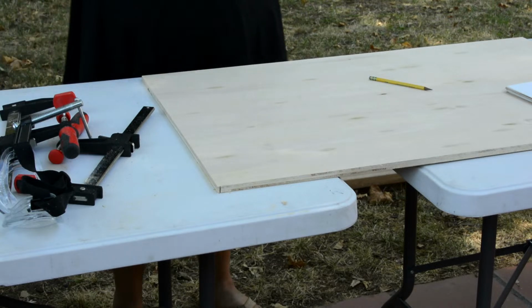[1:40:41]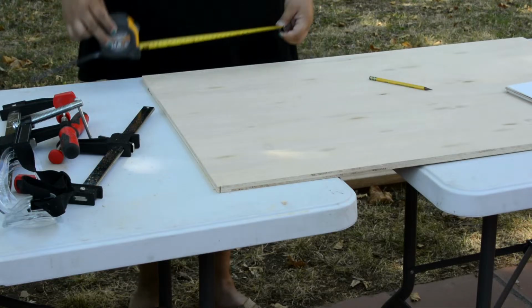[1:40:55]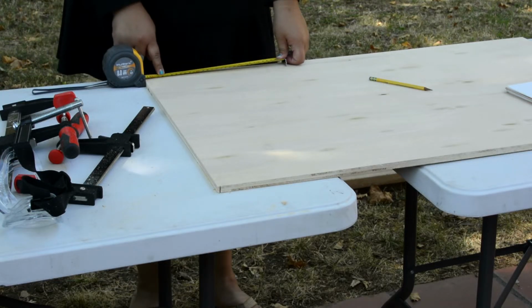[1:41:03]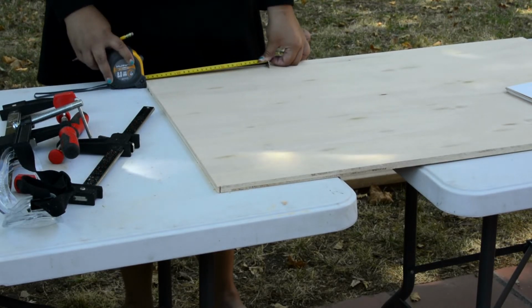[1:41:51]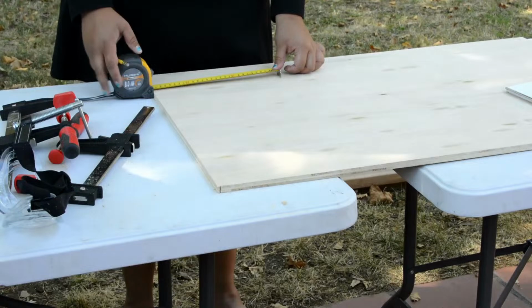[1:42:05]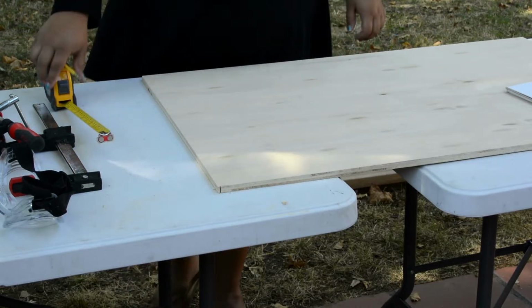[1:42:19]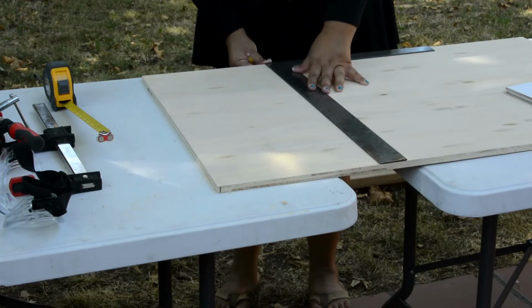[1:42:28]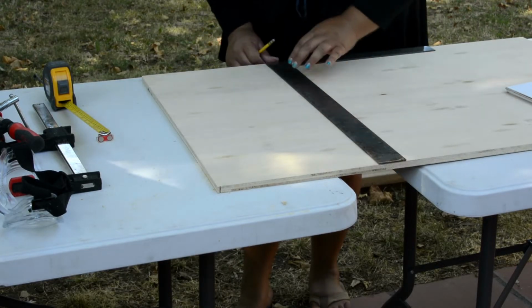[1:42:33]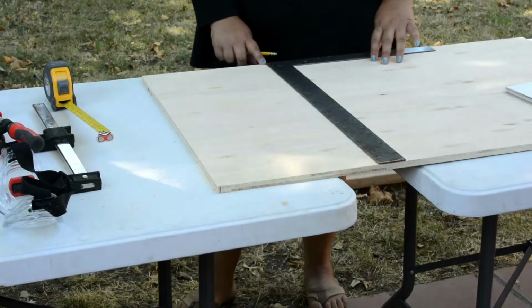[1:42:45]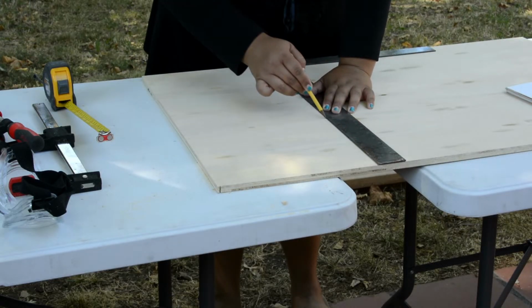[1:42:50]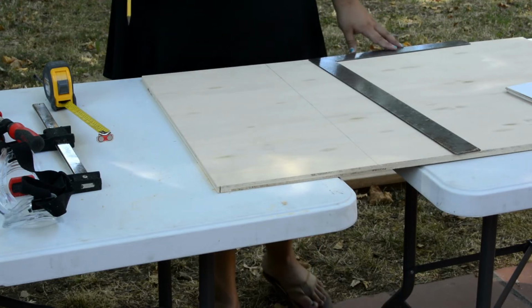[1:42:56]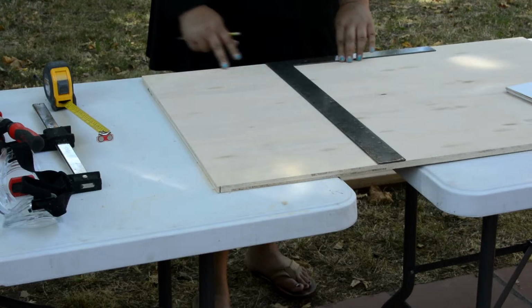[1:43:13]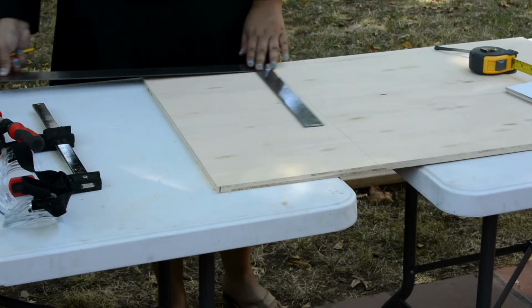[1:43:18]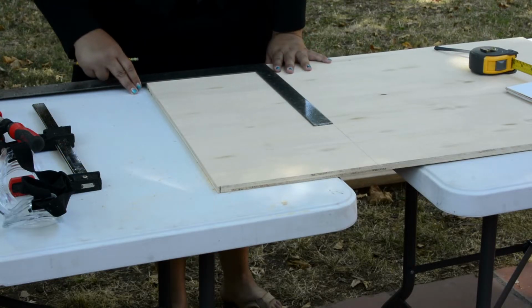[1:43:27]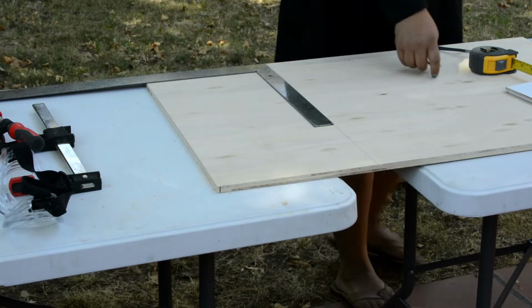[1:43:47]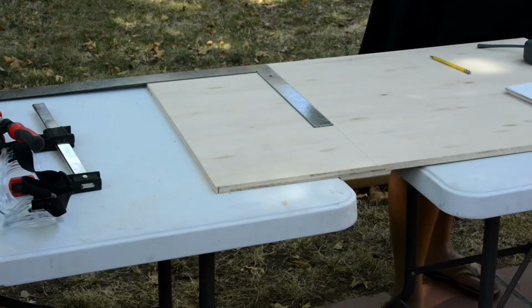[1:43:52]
I mean, overall, it looks good. Okay, so now let me get that wood glue and read how to use it. Okay, so I'm gonna get a piece of cardboard, I think. Use. I'm probably gonna need to use. I don't know if it's.
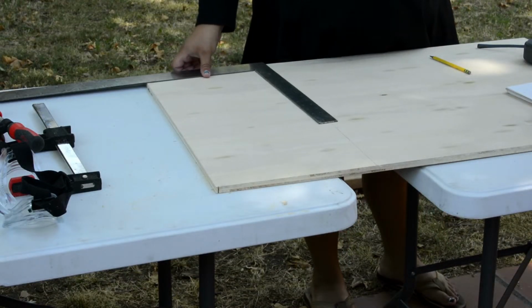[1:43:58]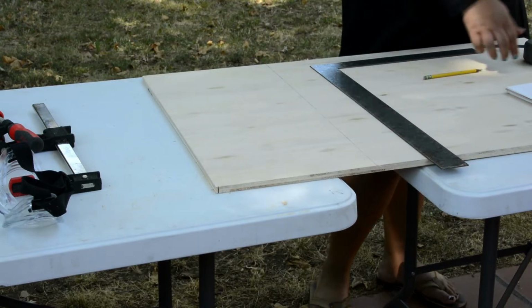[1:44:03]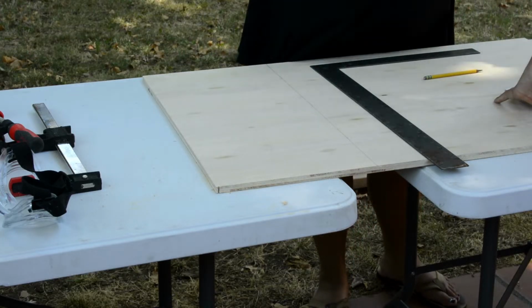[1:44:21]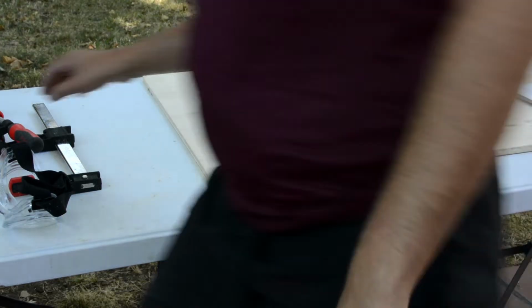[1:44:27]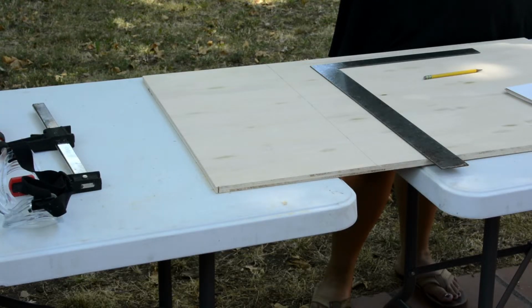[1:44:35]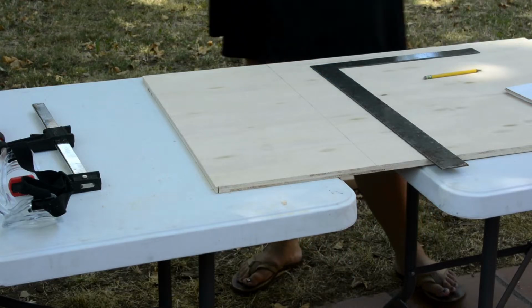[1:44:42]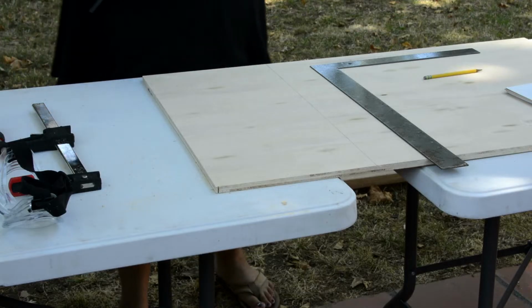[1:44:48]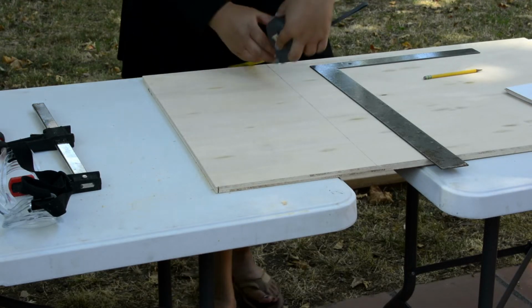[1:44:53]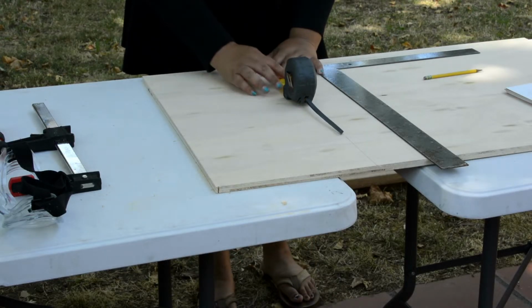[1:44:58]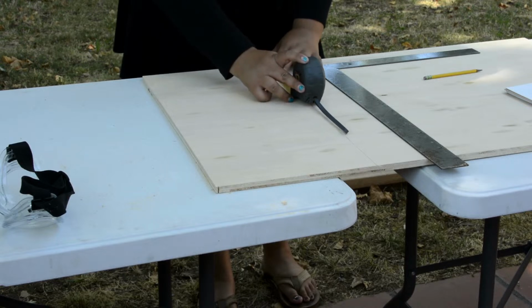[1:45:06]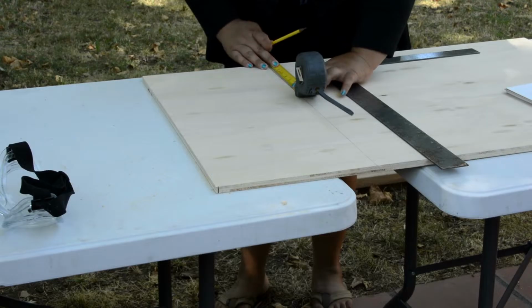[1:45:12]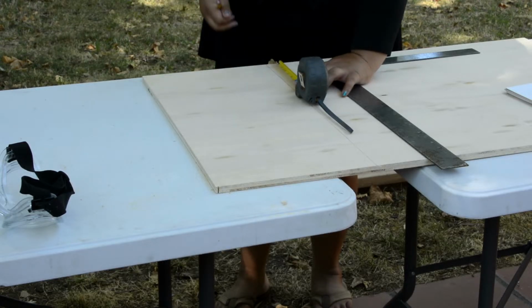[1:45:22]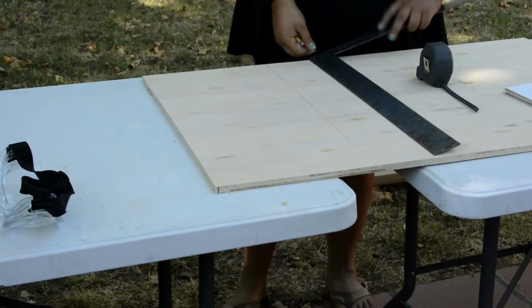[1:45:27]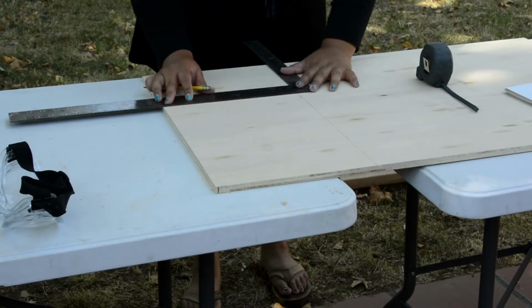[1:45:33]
Okay, so this is the big board. Then these are the cuts. I think it's also in the meters. Yeah, everything is in meters. So, that bottom one is in yeah. I don't know if it's more. I don't know. That's kind of a design issue. This thing might work. You know, when you clamp it, it has a lot more.
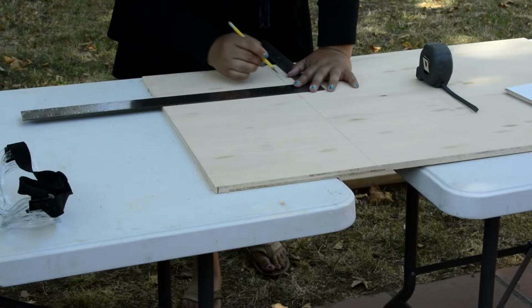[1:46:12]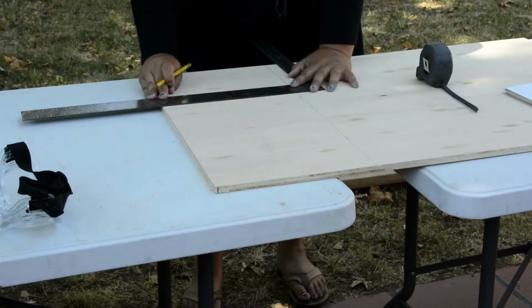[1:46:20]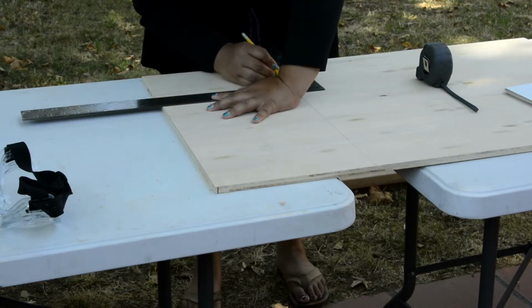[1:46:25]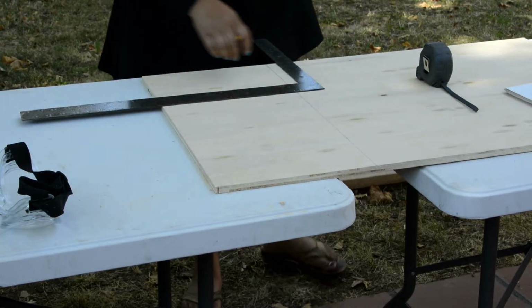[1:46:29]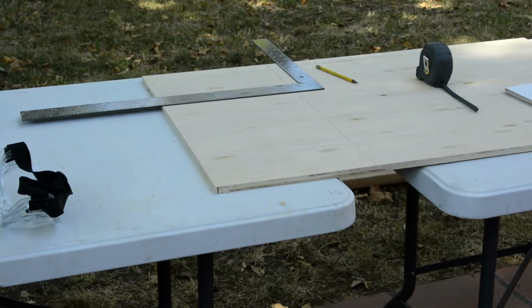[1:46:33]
Okay, I'm gonna get a piece of cardboard and start it. But actually, Sarah, do you want to help me with something really quick? We're gonna grab these clamps from this whiteboard so we have. Oh no! Got some paint. This thing got sensitive paint. Okay, I'll do it. Don't worry about it. Yeah, don't worry about it. I got it.
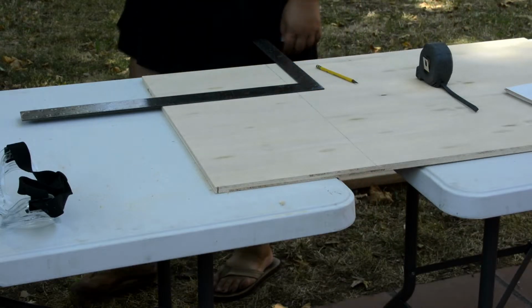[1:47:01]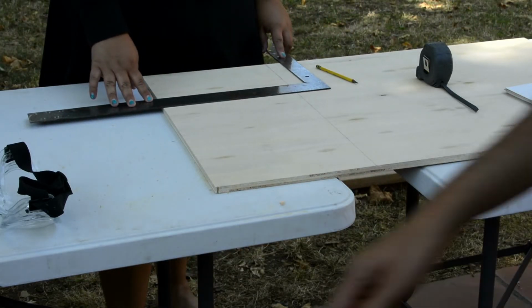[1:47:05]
Well, you need like two, and I need like. Okay. Well, take that one. Or should I do one? Huh? Should I do one? New one? Here, I'll give you. Well, I took them all. Basically.
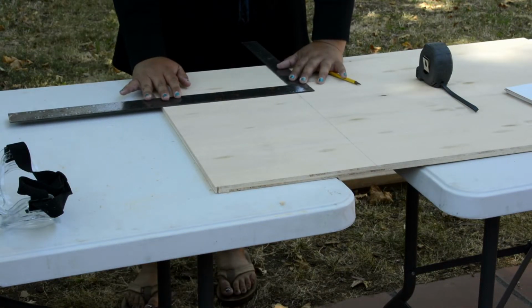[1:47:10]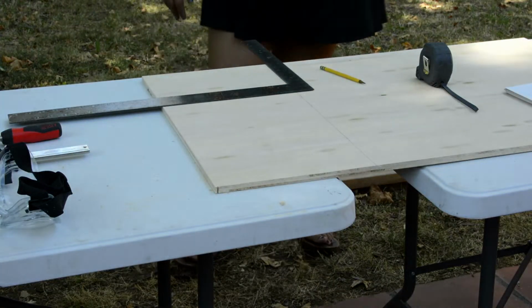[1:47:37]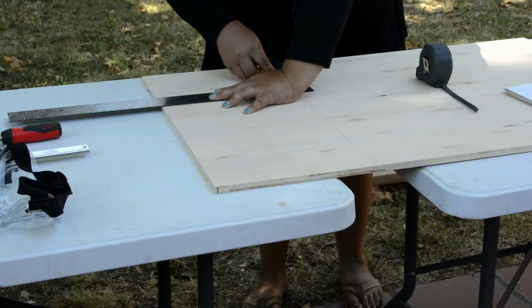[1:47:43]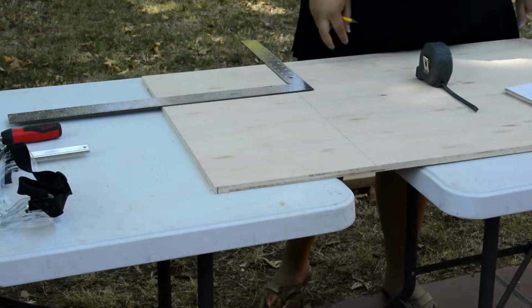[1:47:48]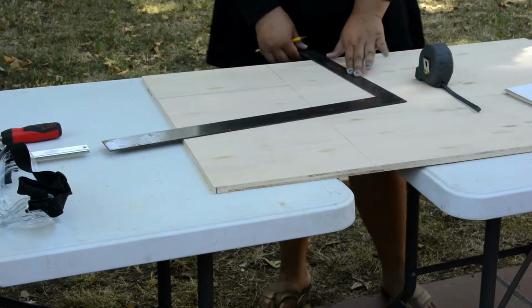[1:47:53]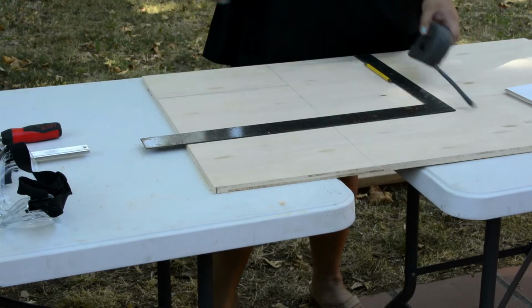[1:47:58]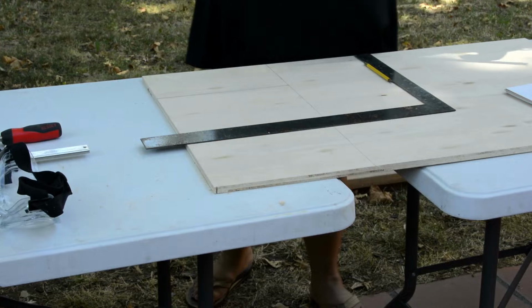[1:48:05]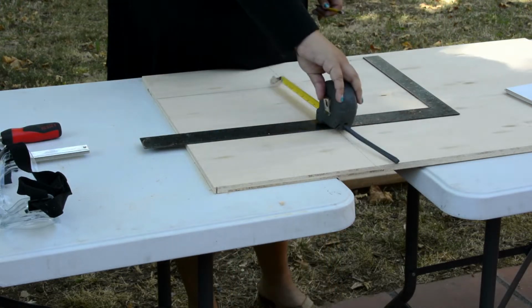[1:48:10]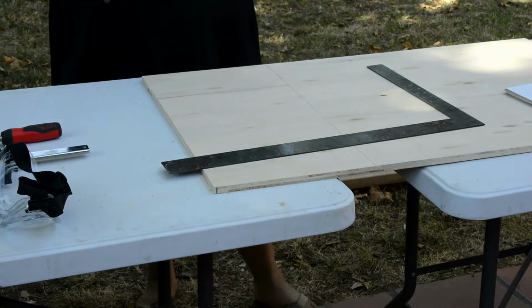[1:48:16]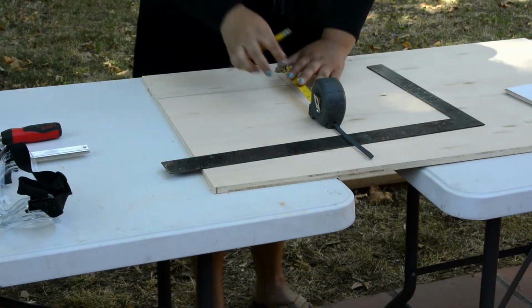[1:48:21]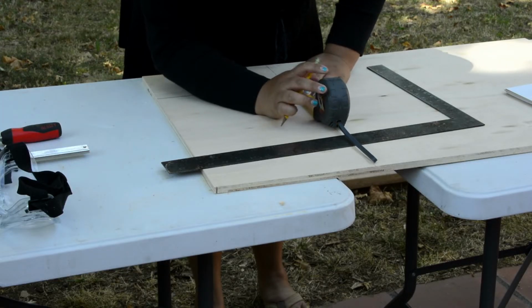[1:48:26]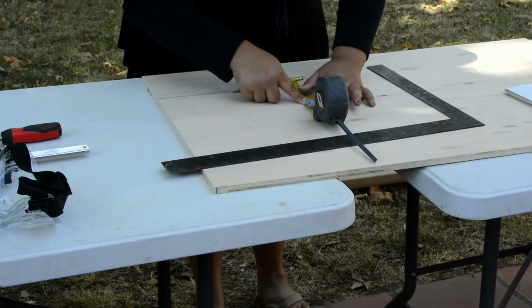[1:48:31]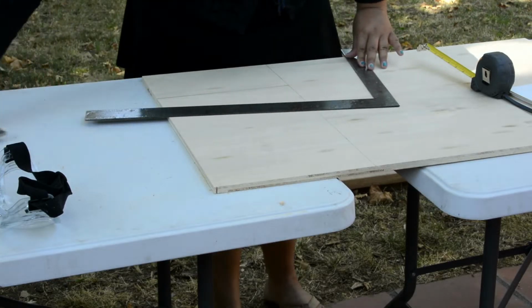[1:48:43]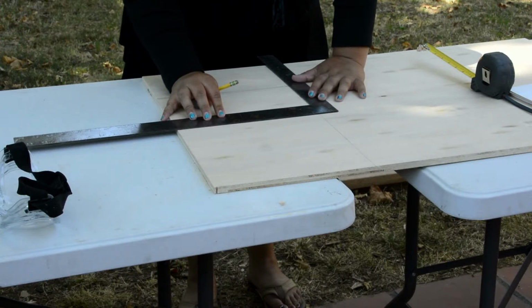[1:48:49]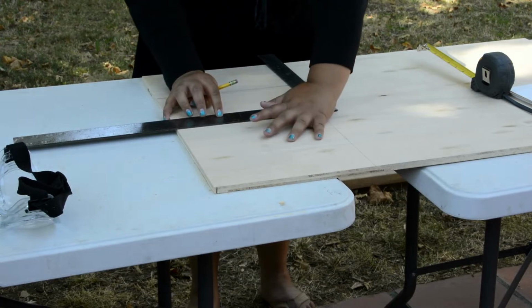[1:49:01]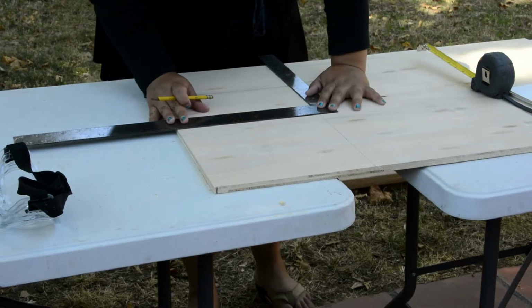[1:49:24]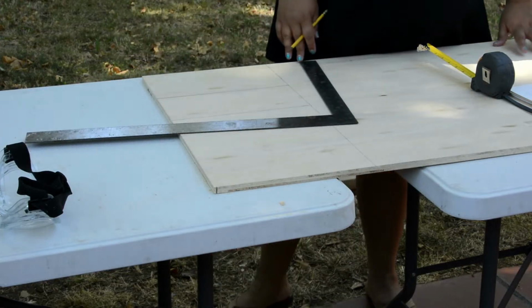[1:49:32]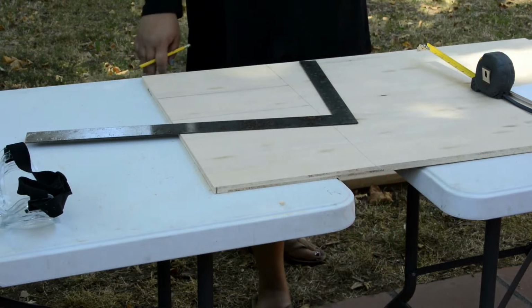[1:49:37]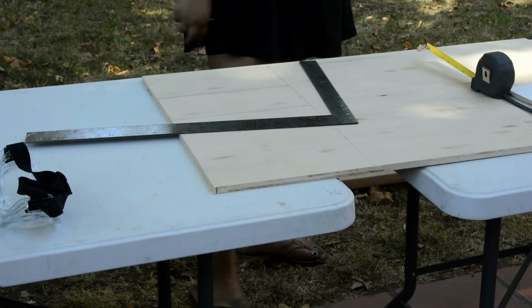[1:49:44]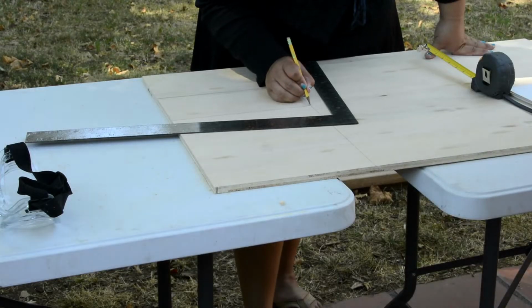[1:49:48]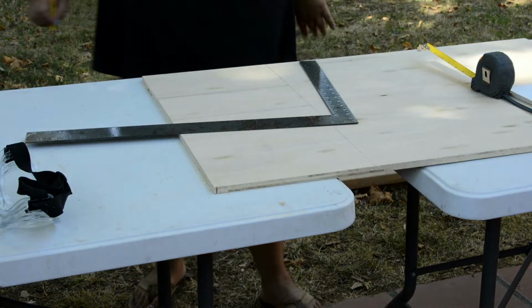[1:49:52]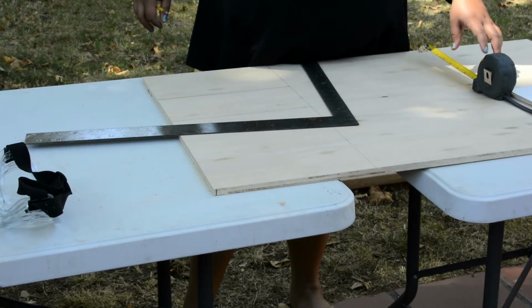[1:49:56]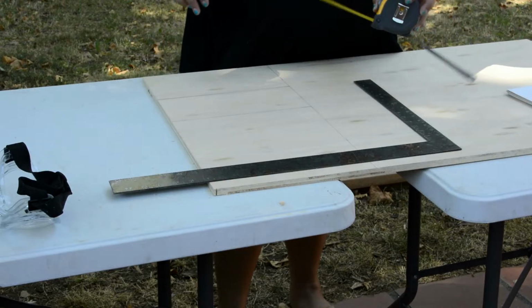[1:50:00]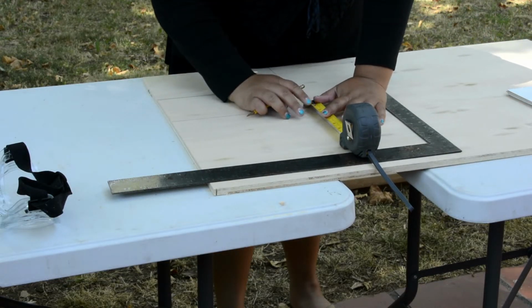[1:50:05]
No. The cutlist optimizer. You don't have to do it that way. It just told me to do it that way. I'm gonna zoom out so we can get both of us in the front. What? Test. Okay.
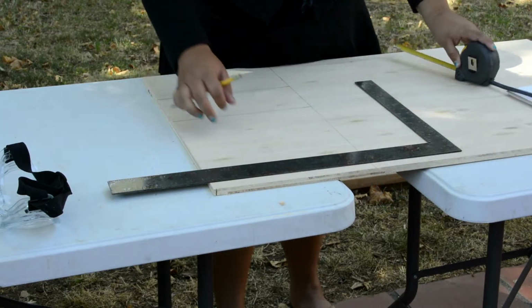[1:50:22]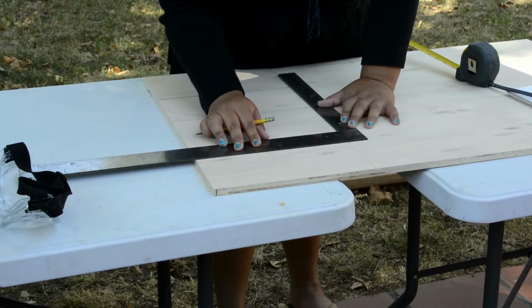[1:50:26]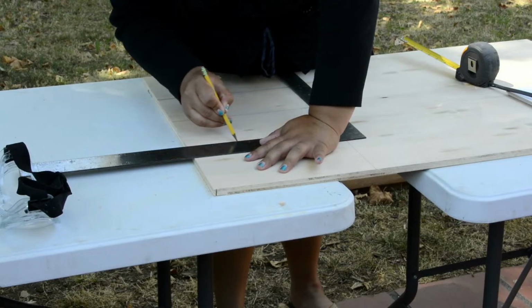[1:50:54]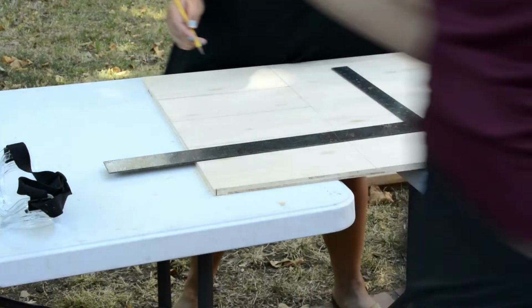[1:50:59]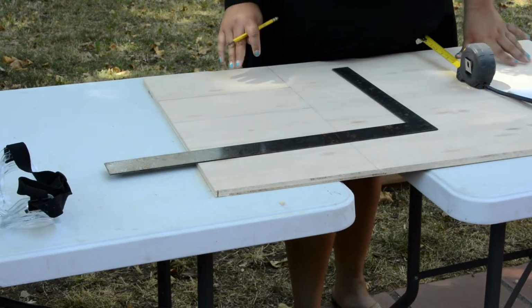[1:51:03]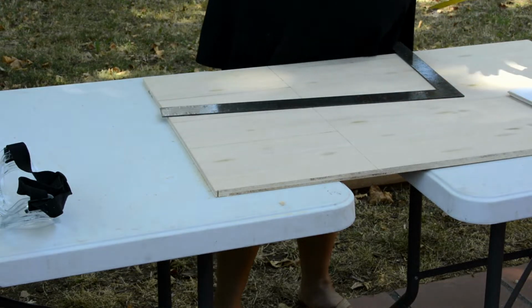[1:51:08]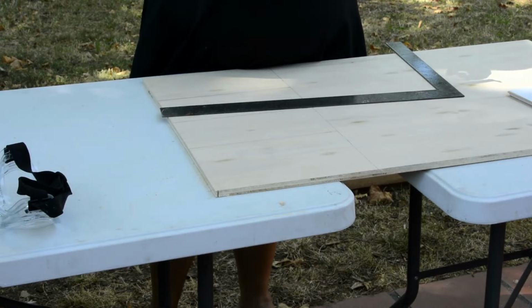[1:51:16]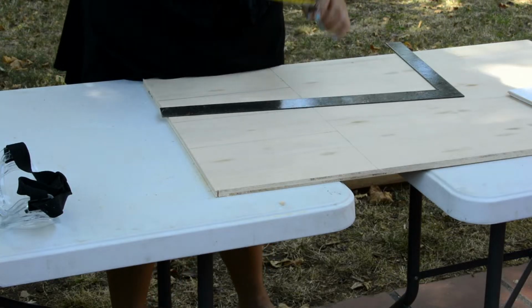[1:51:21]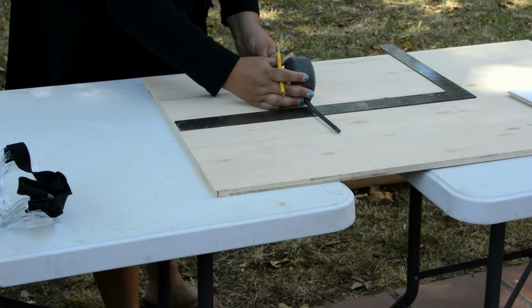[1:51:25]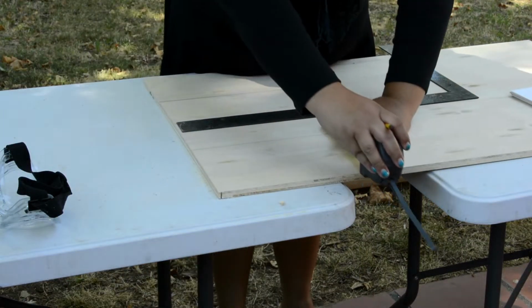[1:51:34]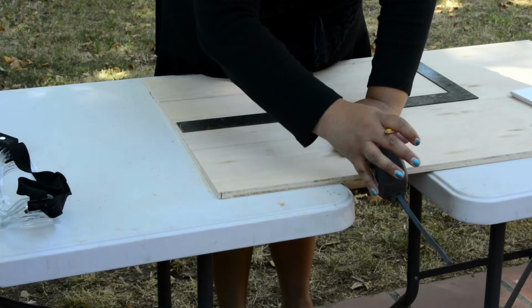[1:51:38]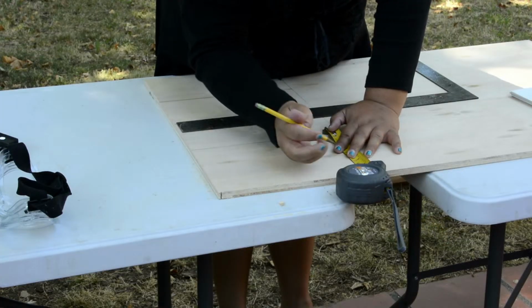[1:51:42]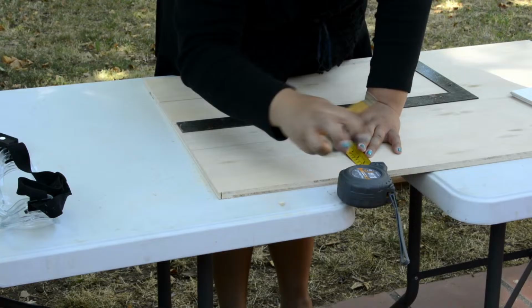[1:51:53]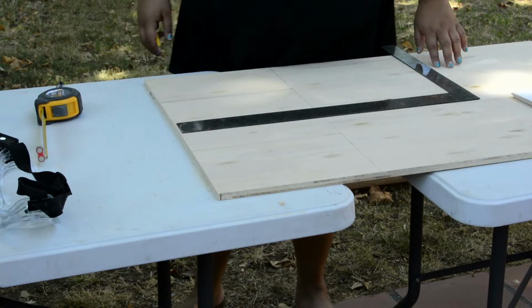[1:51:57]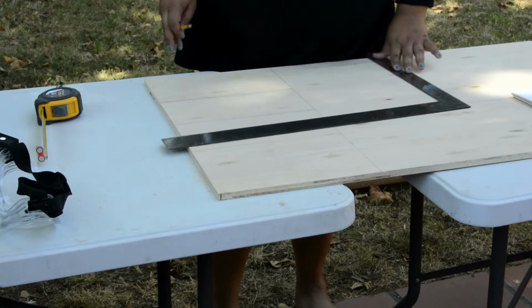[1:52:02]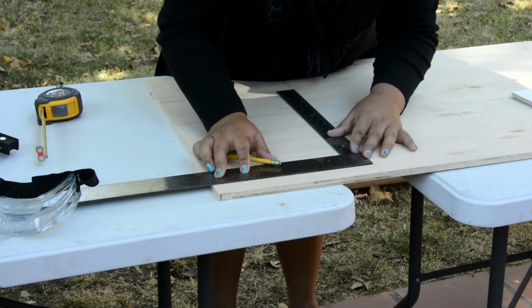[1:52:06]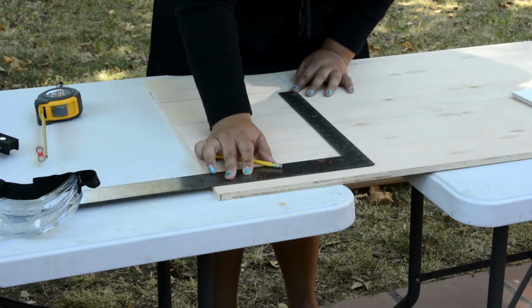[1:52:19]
Well, you didn't want such a problem. Did you have one little sliver though? Yeah, I did. It'll be like 34 millimeters. Did you account for kerf? Mm-hmm. Nice. You're smart. Alright, I think I'm ready to do this thing.
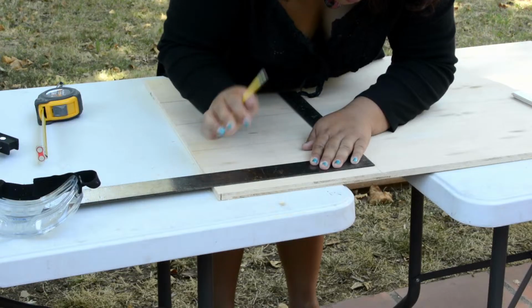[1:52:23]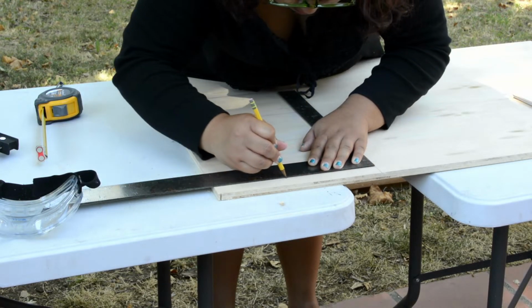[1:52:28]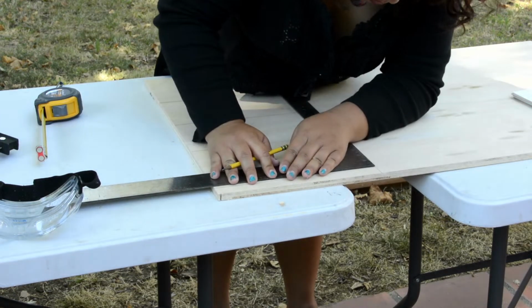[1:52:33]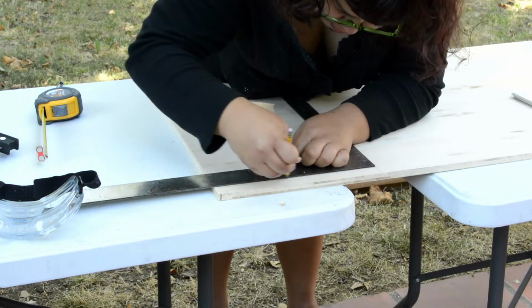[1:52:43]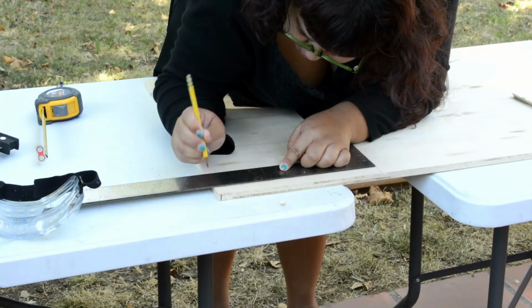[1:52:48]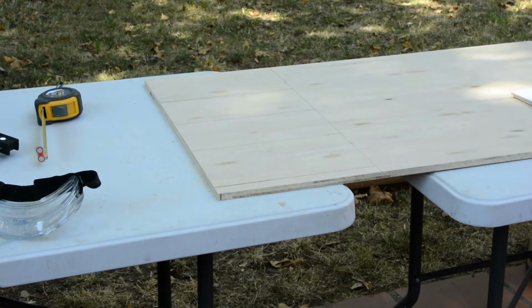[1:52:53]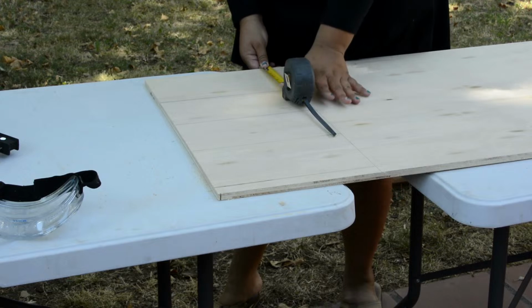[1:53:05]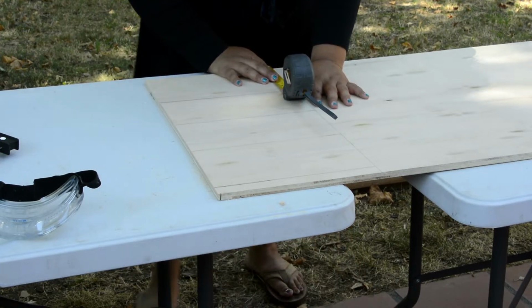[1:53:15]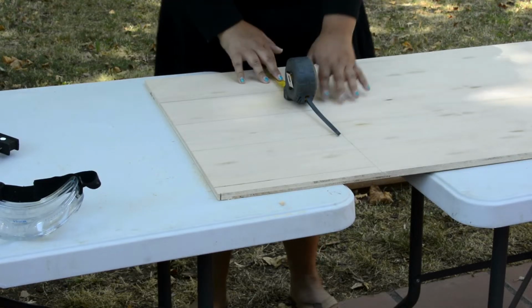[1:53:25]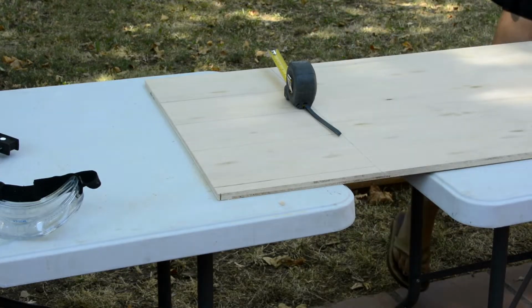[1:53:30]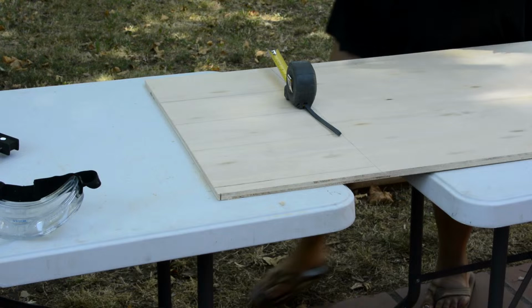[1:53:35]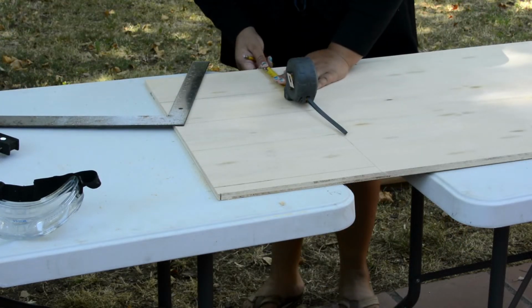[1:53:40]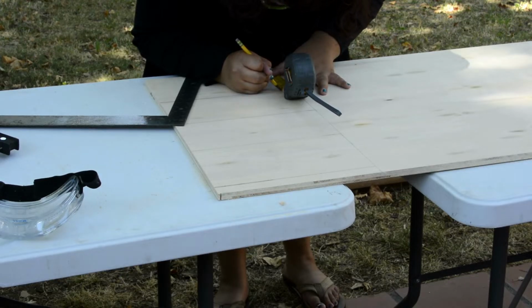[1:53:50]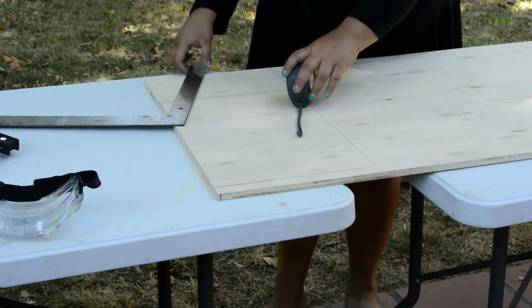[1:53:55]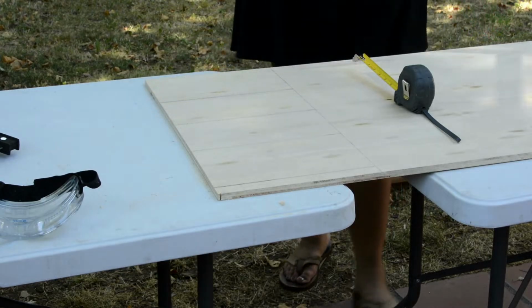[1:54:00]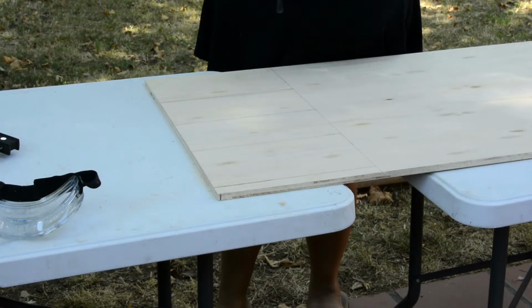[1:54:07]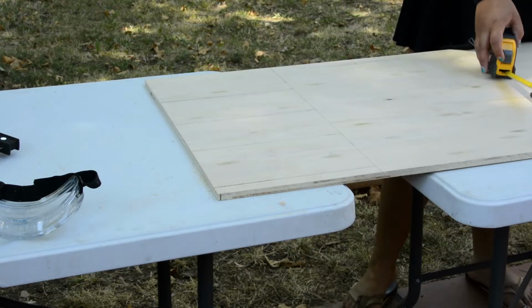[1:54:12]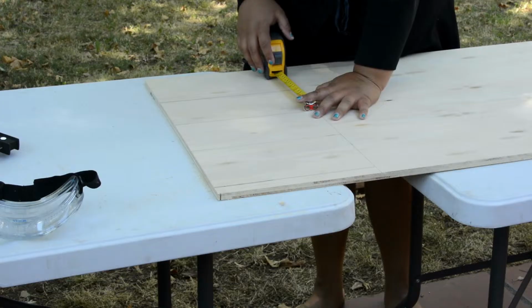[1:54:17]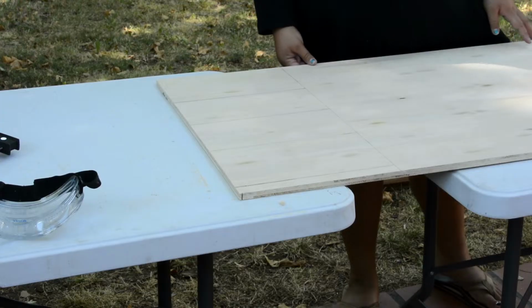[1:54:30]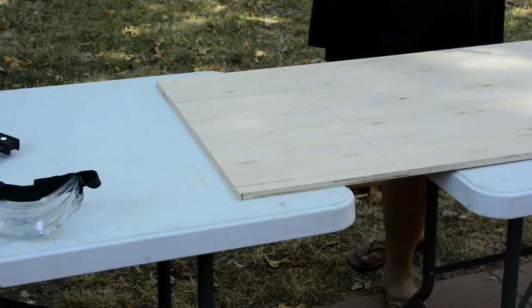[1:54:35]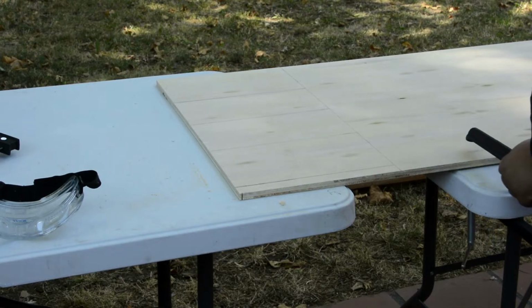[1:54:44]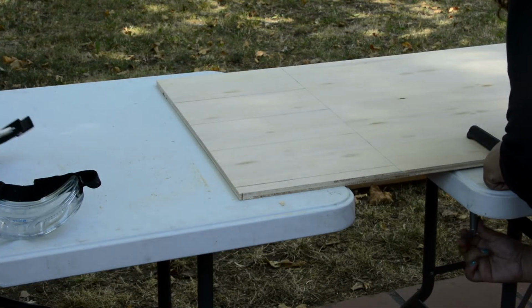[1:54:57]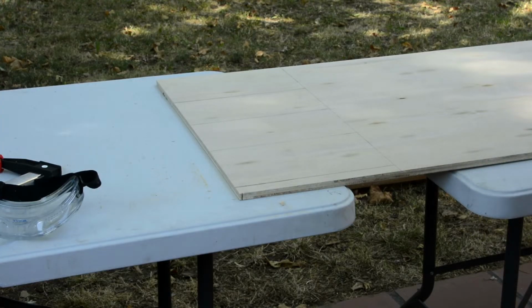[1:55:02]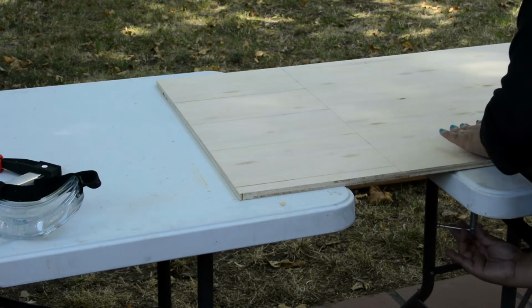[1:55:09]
Oh, it says apply generously. It says you can just wipe it off. I just need to find a rack. My mom always takes my rack.
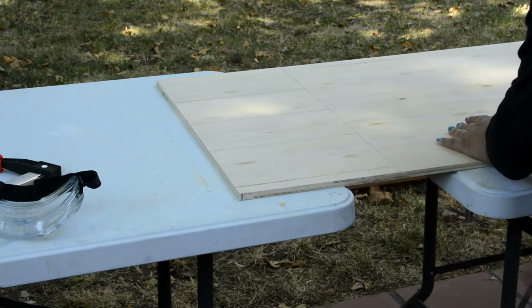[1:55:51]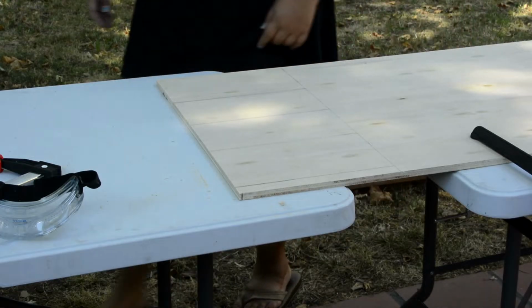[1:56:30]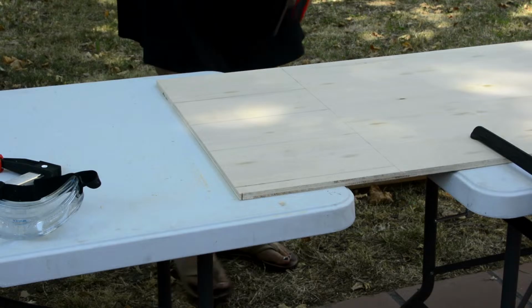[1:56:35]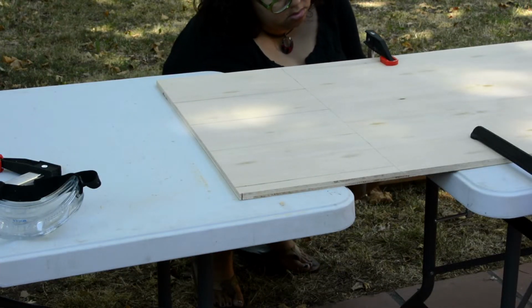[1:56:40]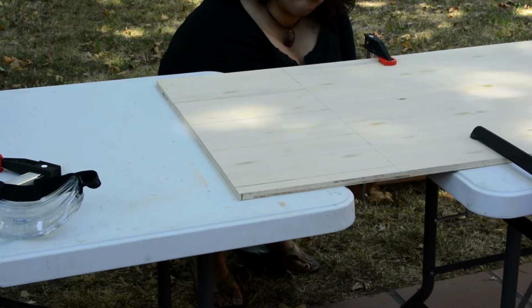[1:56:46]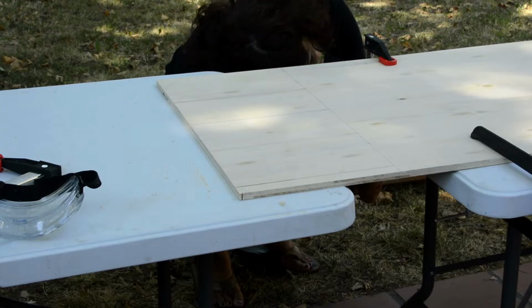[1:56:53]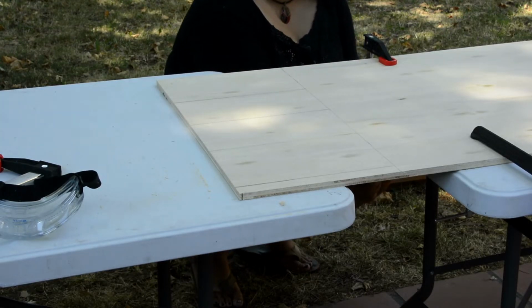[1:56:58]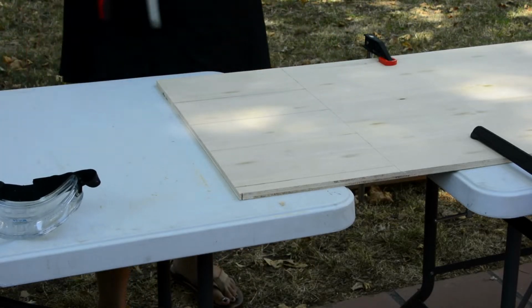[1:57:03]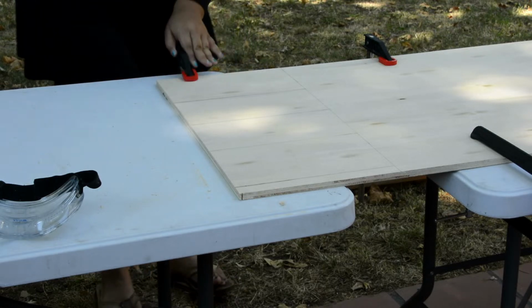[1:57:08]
Yeah, be careful. You can over tighten because that table, if you look at the bottom, there's a bunch of holes from where I clamped. They're not holes, but indents. In a minute, I'll hit you right back.
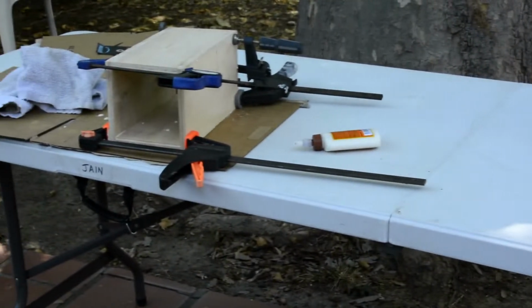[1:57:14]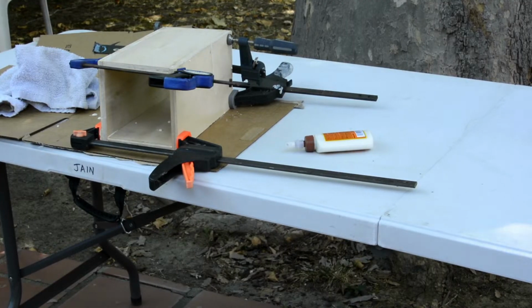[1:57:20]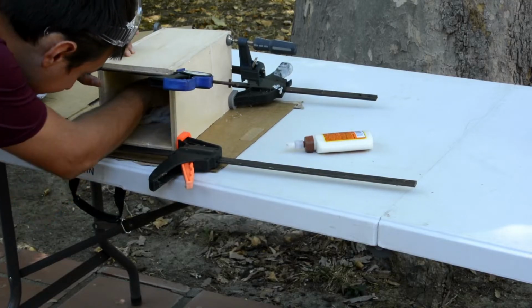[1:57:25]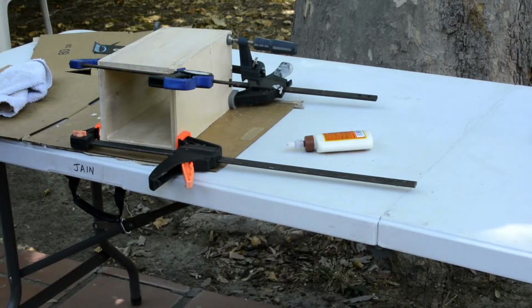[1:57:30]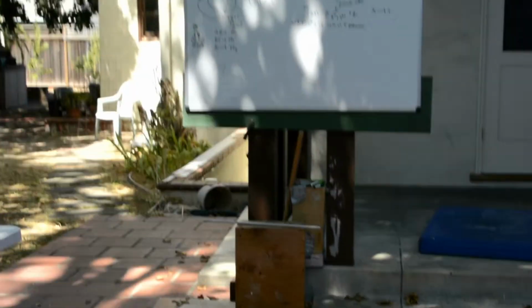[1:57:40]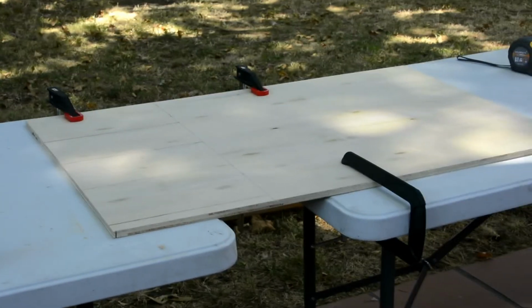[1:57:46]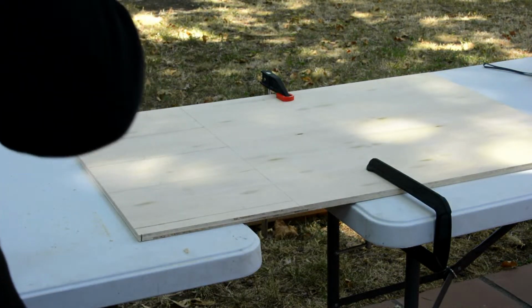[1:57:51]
All right, so that's the box. So the box I feel like is actually not so bad. I think this thing actually might work. I think the problem from when I built the synth box, which is over there, that box where I gave up, is I just didn't use clamps. I think clamps are the key to that wood glue.
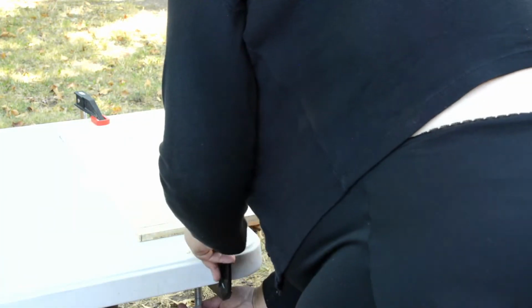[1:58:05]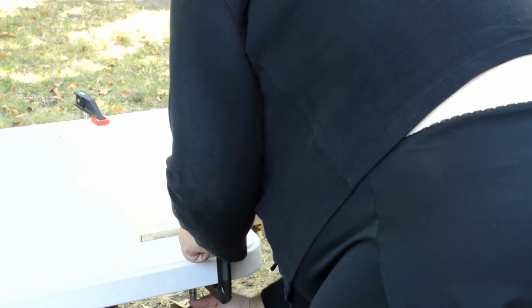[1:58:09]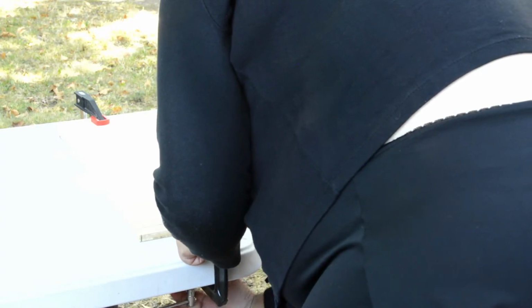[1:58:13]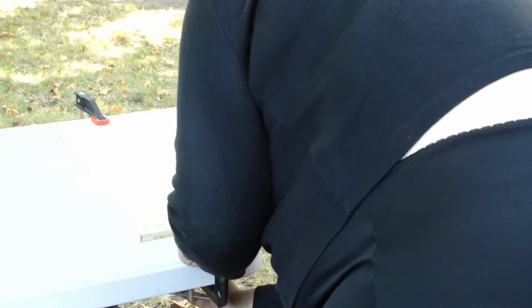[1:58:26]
And I do think we're gonna paint this thing. We should decorate it something fun. You know, we should do that bacteria glowing thing on it. Little mural. You think that'd be fun?
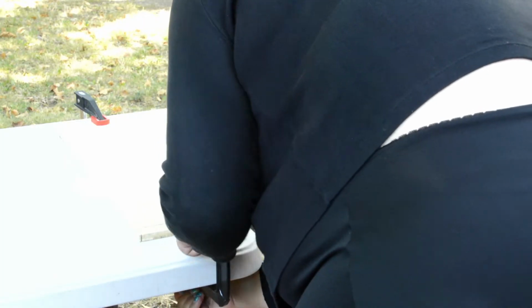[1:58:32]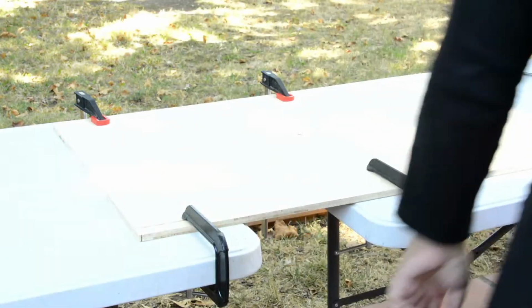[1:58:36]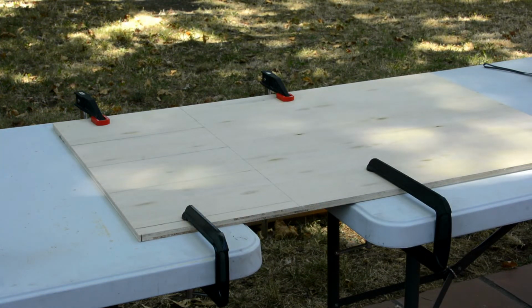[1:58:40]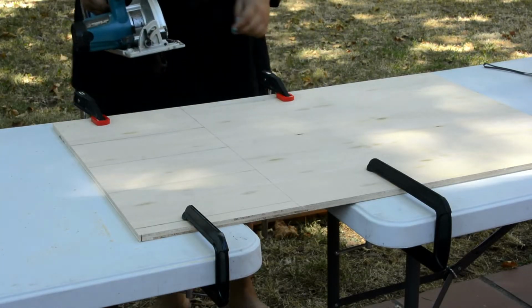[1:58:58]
I think it's like one of these cool R&B types. What are you looking for? Oh, the goggles. One of these cool R&B types. In a minute, I'll hit you right back.
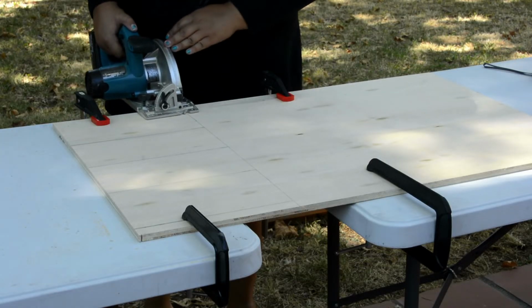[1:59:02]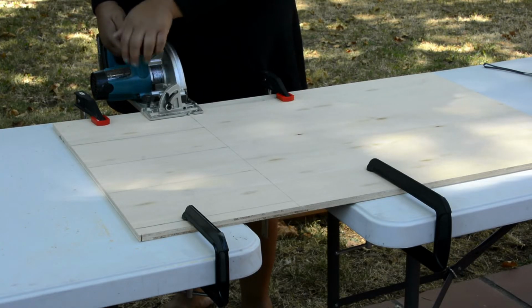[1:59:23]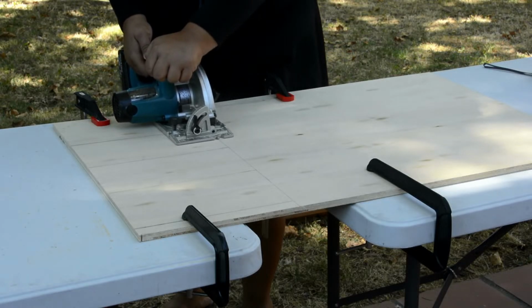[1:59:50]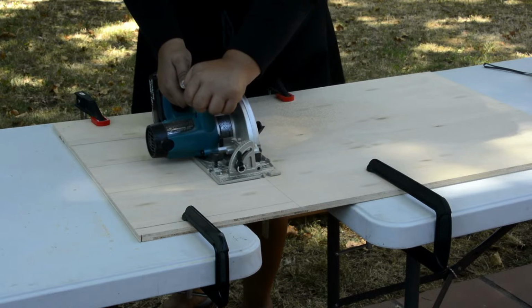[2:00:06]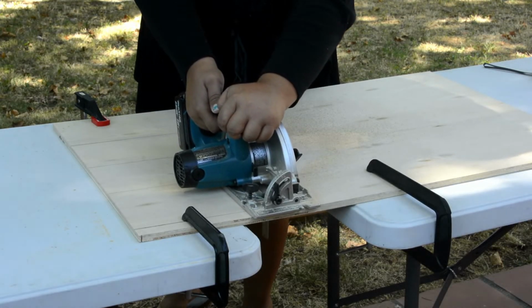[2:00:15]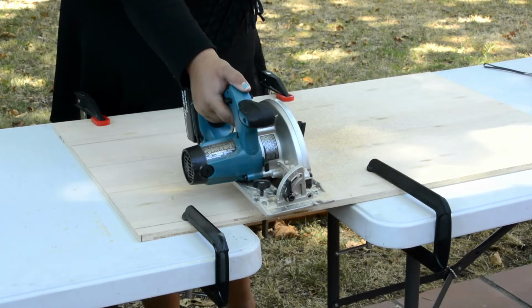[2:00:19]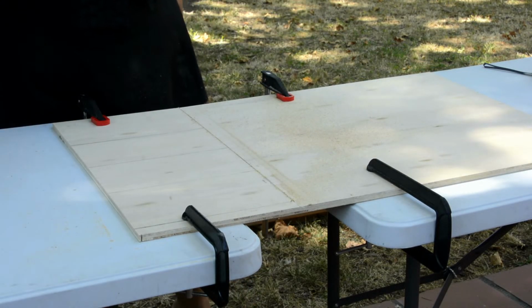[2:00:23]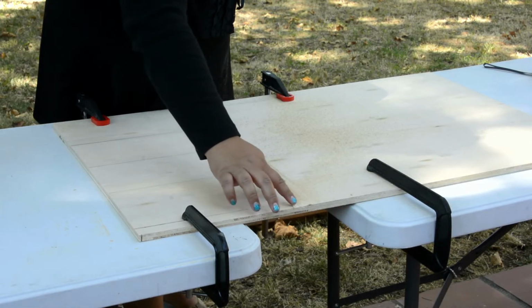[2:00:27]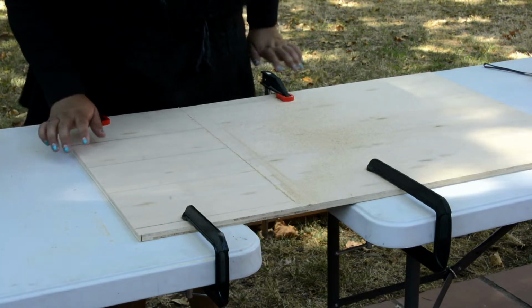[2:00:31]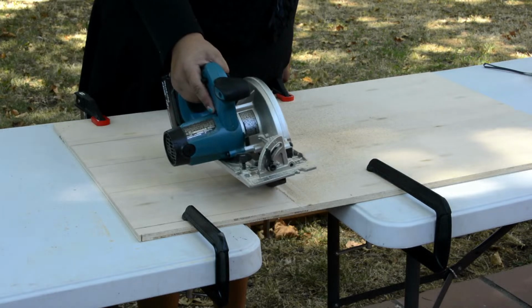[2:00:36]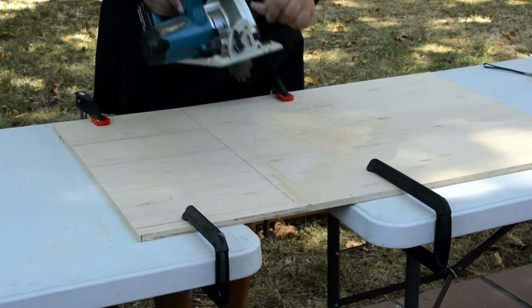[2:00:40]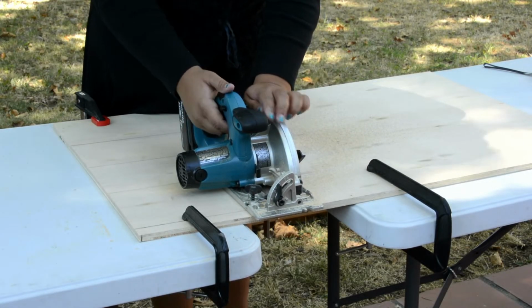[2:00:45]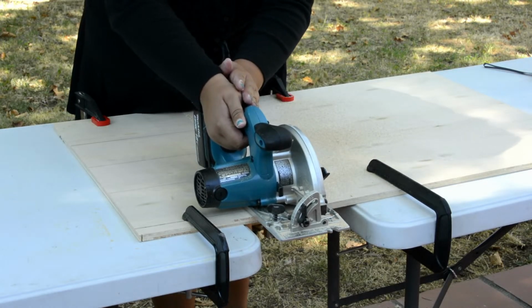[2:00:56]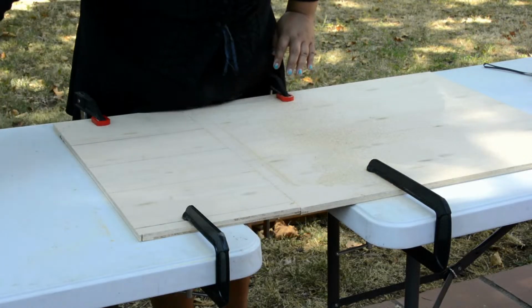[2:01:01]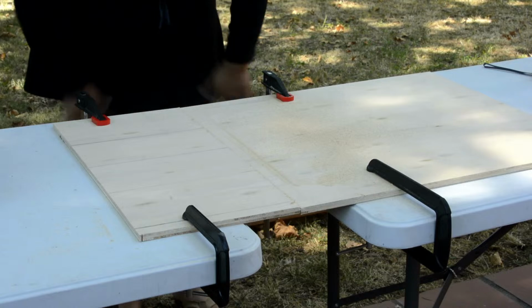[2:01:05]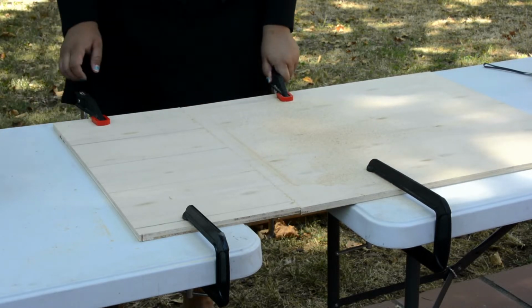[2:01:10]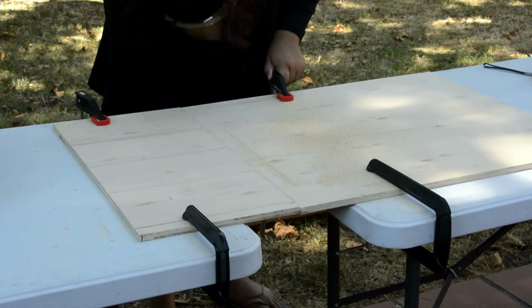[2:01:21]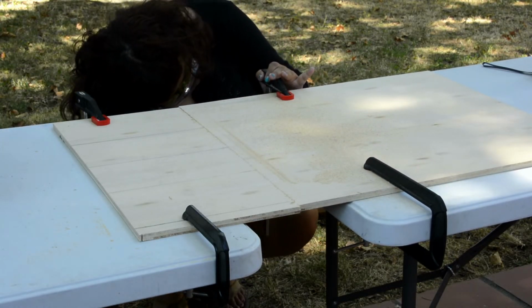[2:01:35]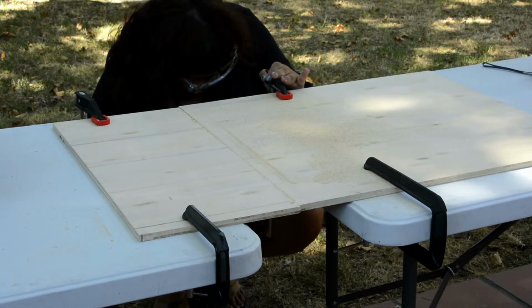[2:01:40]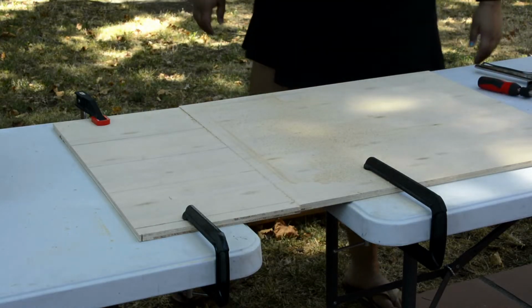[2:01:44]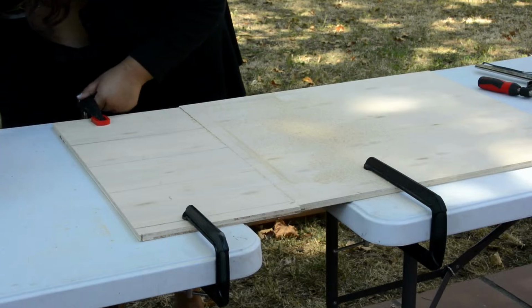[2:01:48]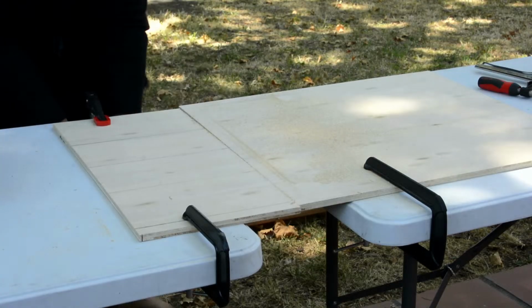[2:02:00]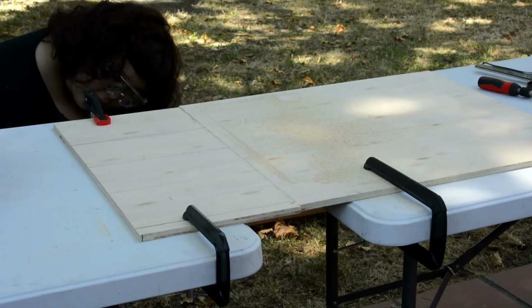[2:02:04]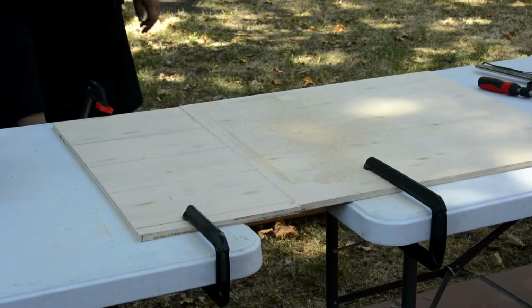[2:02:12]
Discussing wavelength stabilization of laser diodes and why it is important for this project.
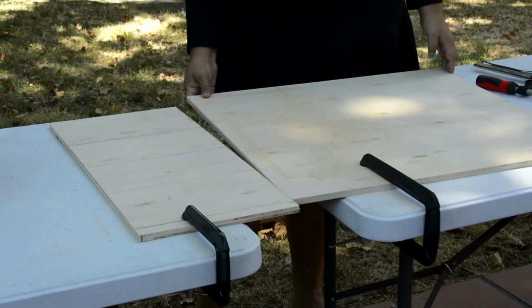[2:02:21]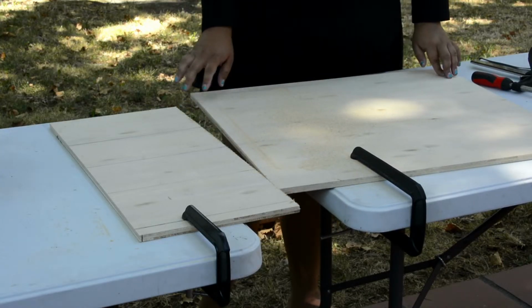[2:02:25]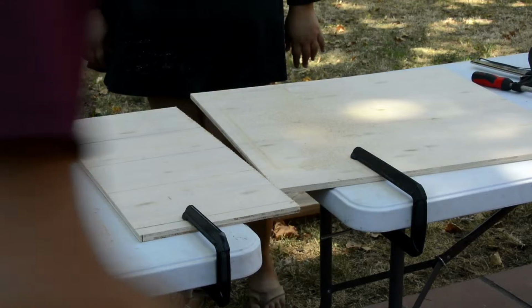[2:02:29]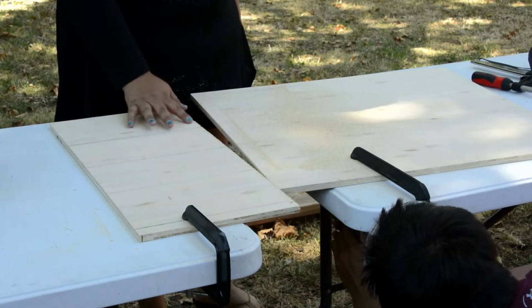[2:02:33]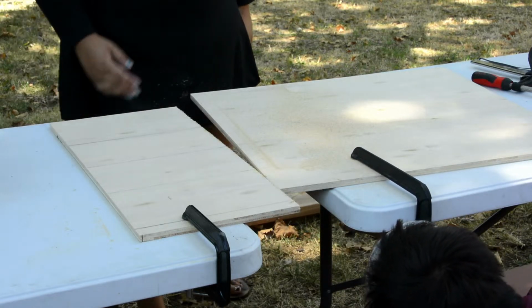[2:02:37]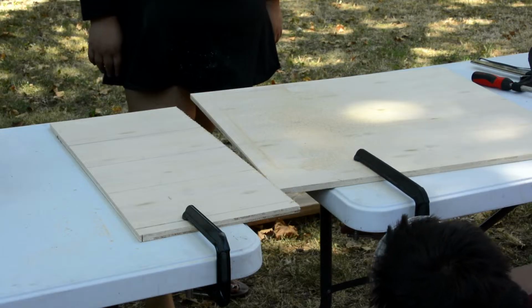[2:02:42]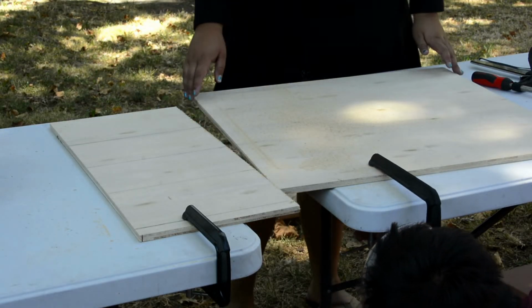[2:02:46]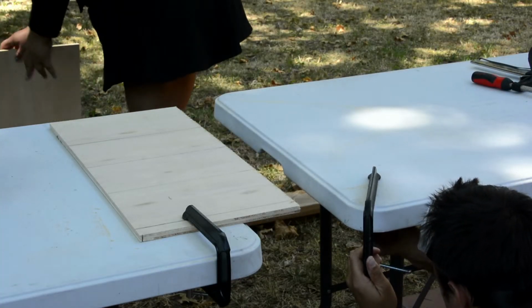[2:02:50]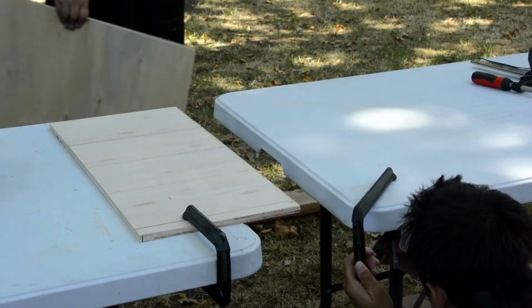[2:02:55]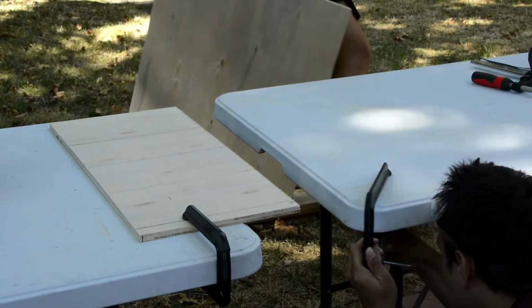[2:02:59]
Oh wait, you broke it. Can I break it? Yeah, what did I break? The plastic. You can clamp it down left side. No, you're fair. Oh, geez Louise. What do you mean? What is this? I don't know. Oh yeah, it's broken on this side too.
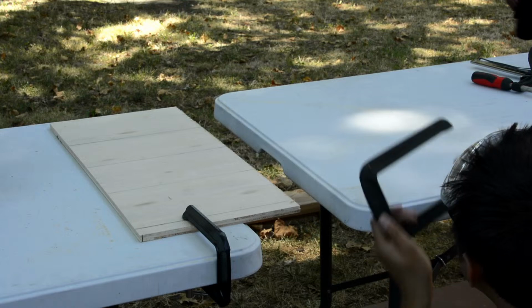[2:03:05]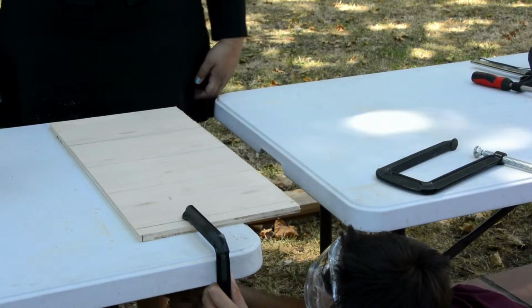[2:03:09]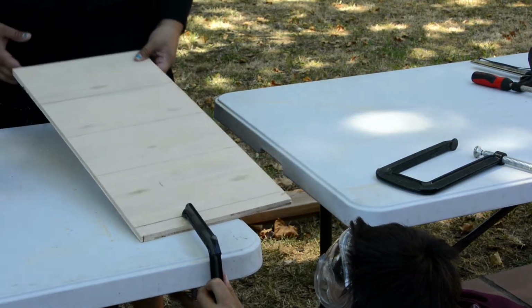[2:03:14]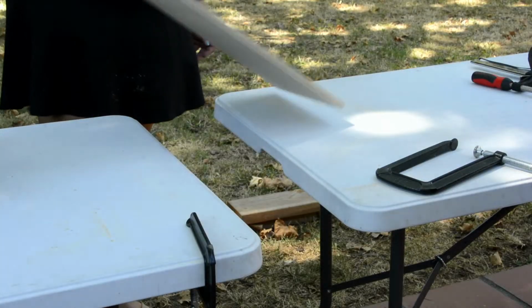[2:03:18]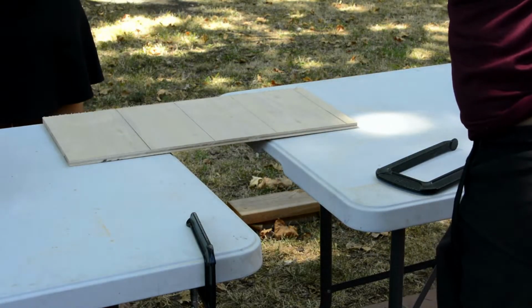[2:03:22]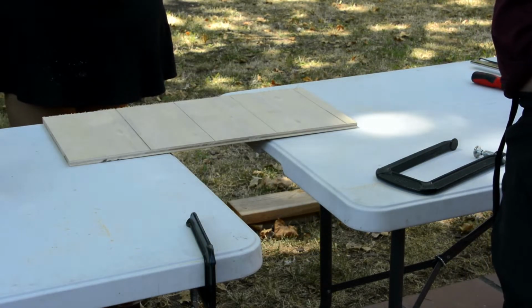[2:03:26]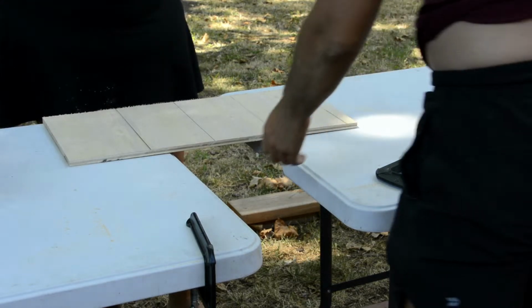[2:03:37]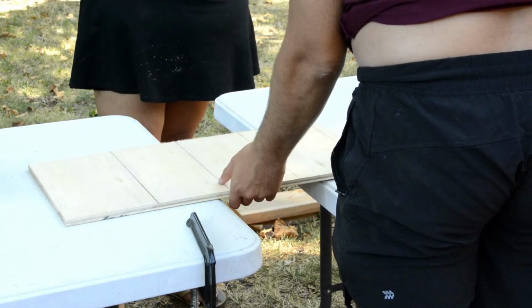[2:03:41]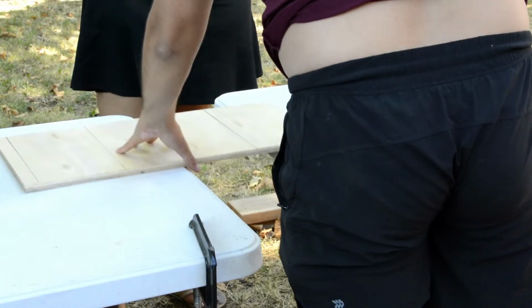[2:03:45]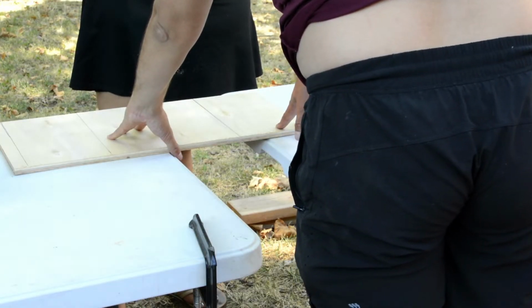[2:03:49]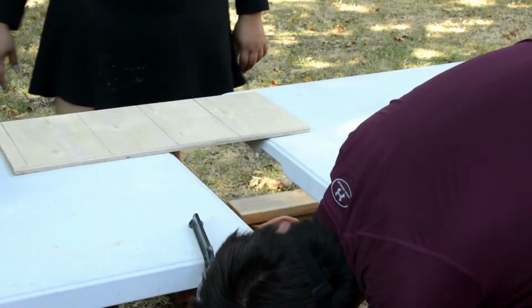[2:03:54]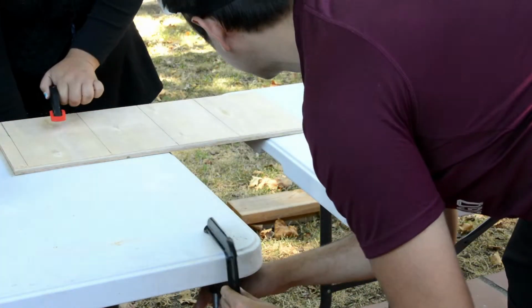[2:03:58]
All right. No, it's okay. I mean, as long as you... No. Oh, sorry. I guess they use some gloves. No, my finger was somewhere. Yeah. So you're gonna put from that side. Okay, then we'll move it back. So you only really need... I feel like we just use those.
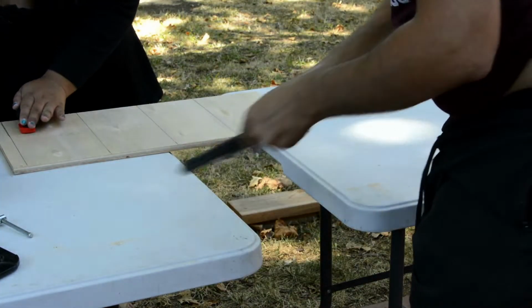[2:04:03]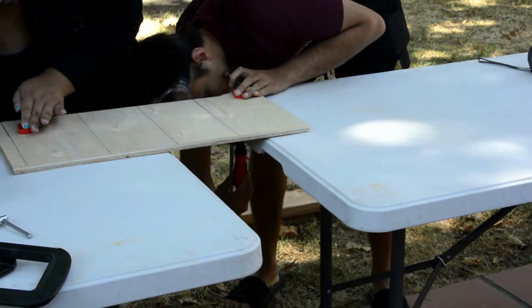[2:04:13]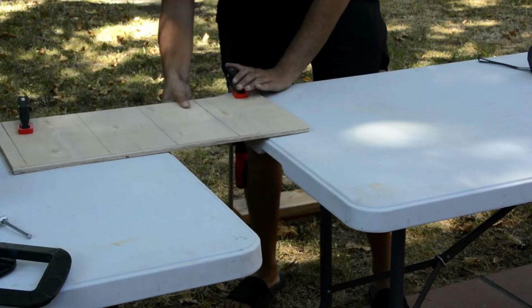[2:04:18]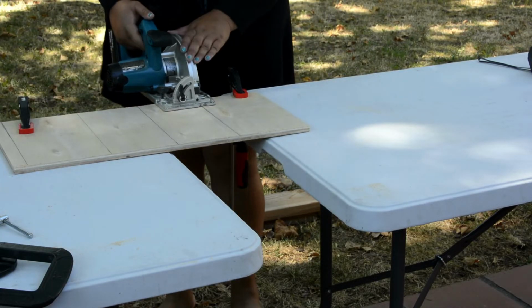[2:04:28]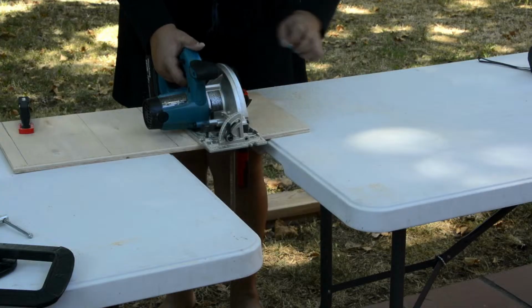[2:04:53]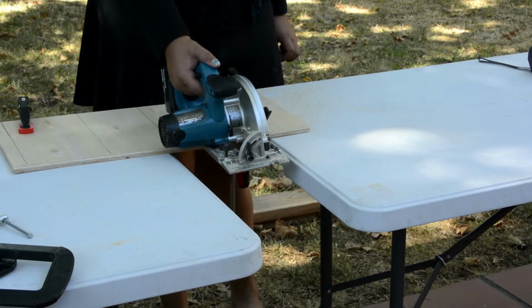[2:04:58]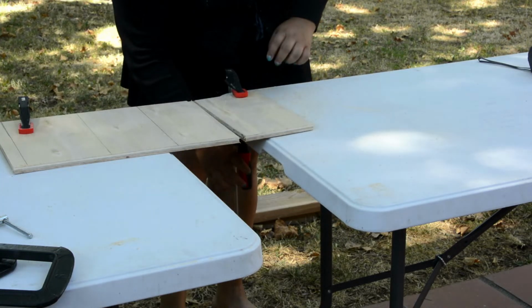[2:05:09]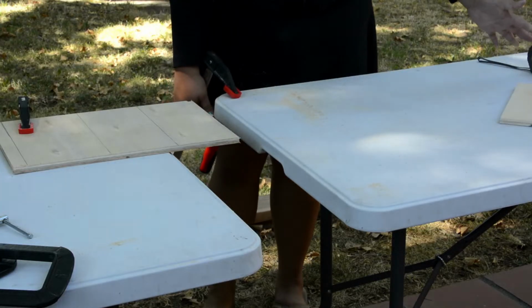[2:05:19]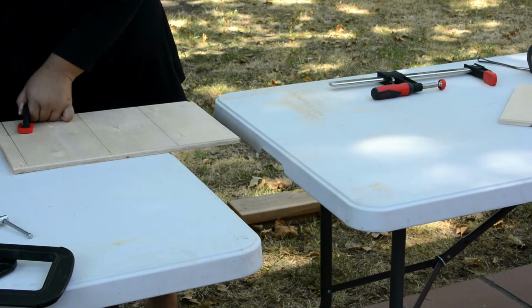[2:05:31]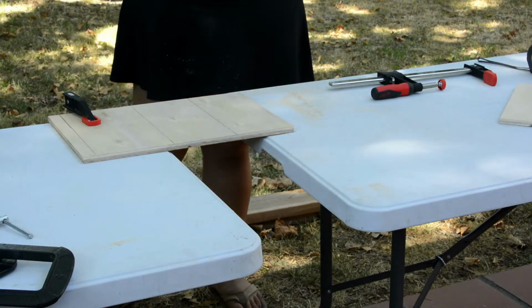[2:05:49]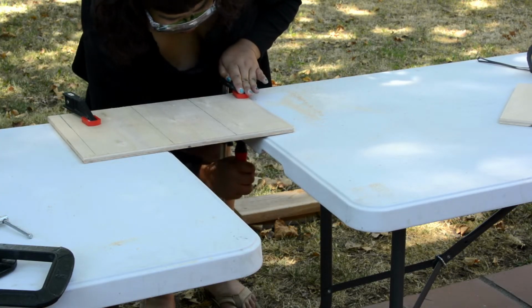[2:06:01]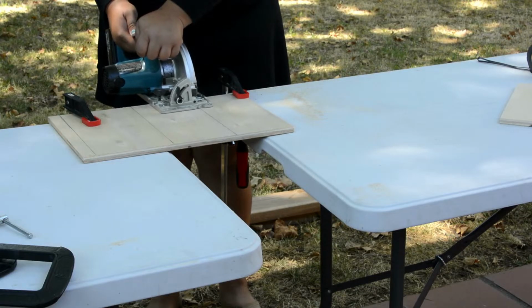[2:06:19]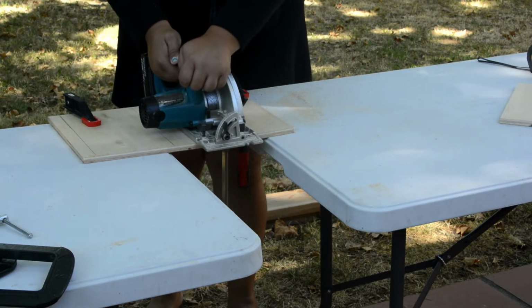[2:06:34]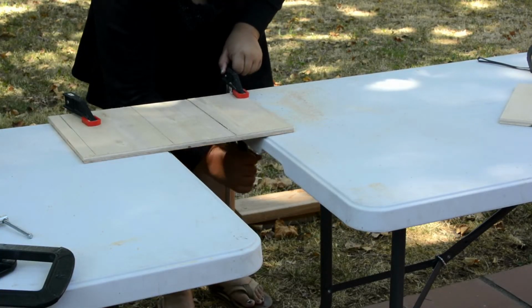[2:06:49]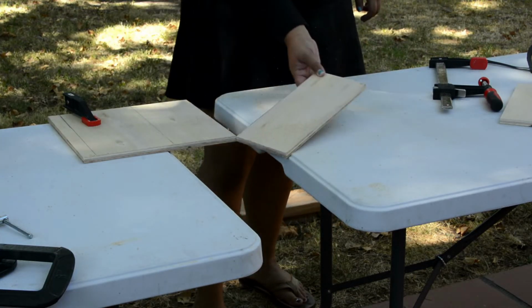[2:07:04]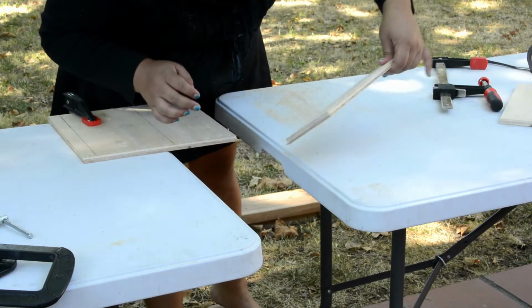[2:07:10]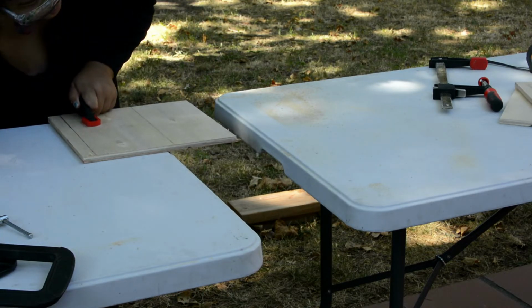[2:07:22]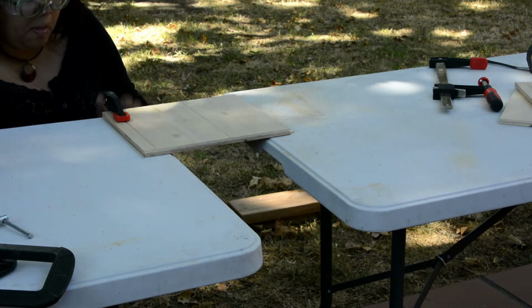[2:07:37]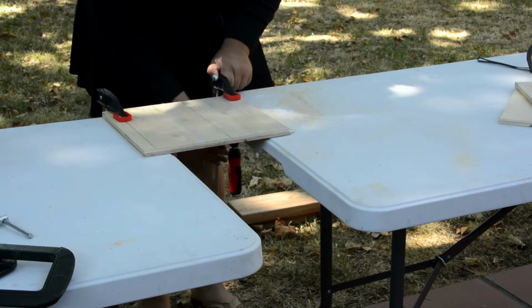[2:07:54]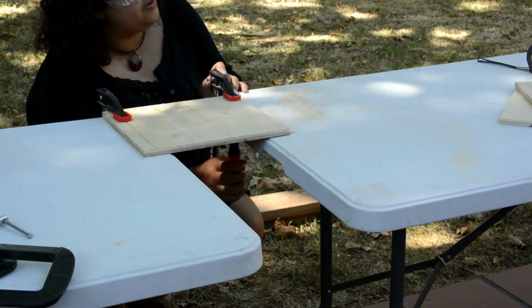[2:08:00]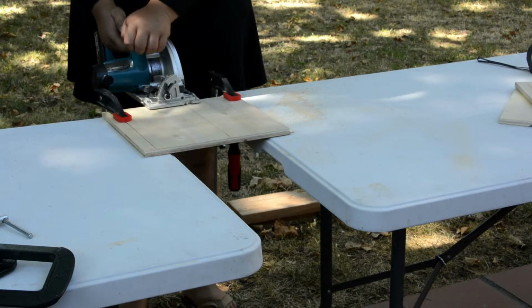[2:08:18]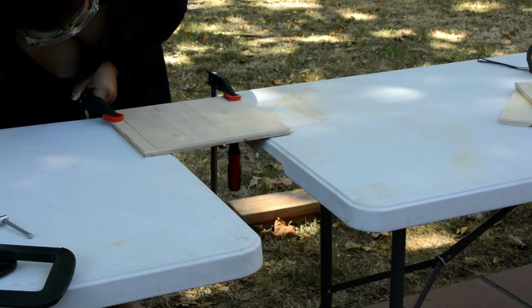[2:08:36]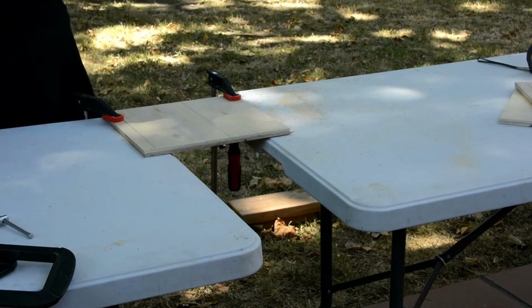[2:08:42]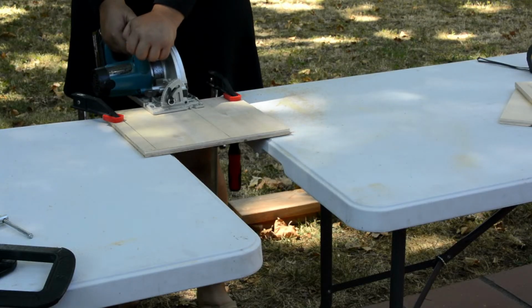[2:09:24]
Bless you. He's married? Yeah. Babies? There's Asha. Asha's my dad's cousin's daughter. She's in 5th grade, so she's pretty old. Yeah. She's not weird.
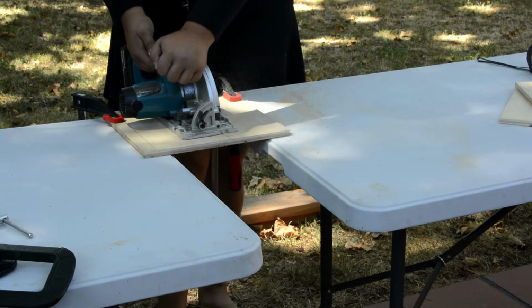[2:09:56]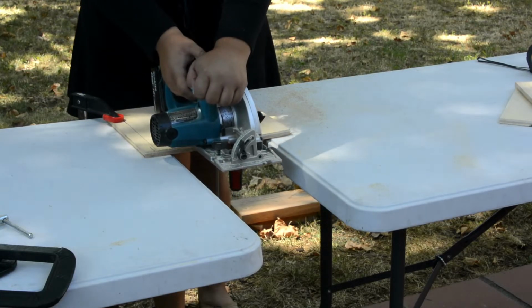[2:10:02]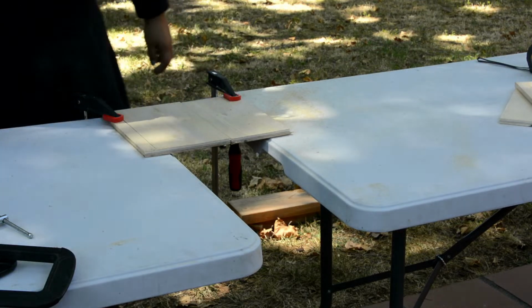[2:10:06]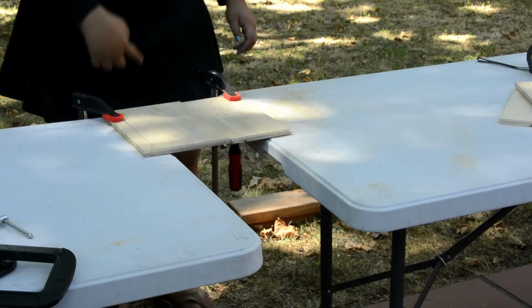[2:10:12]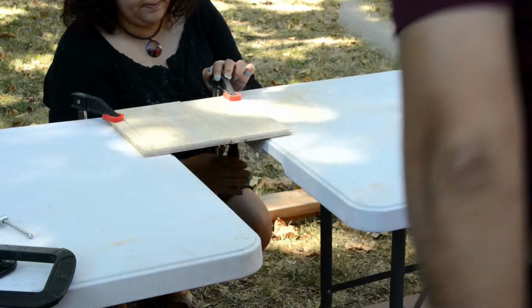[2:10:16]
Way to follow through. Nice job. Yeah. Where did my little kerf piece go? Or not kerf piece. Yeah. I'm gonna go try to drill into this thing, I think. I don't know if I have metric drill bits.
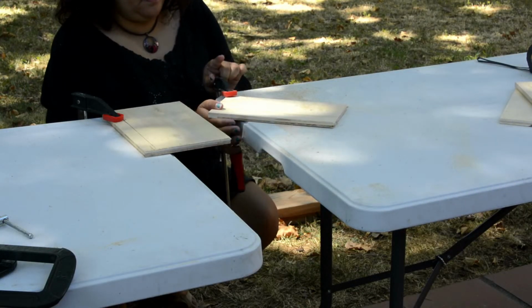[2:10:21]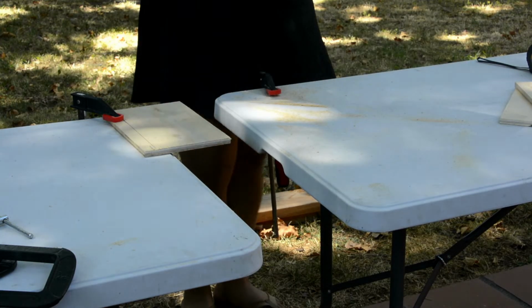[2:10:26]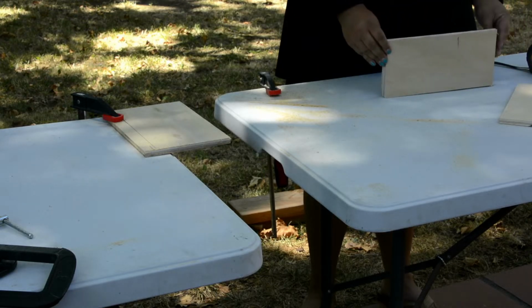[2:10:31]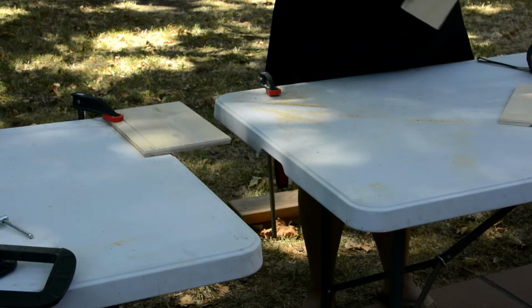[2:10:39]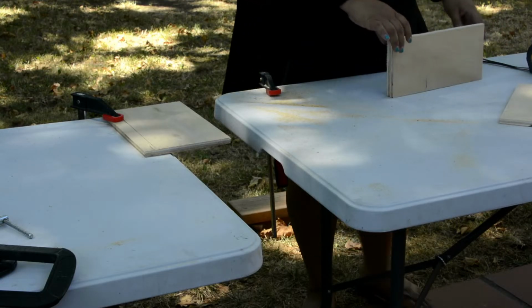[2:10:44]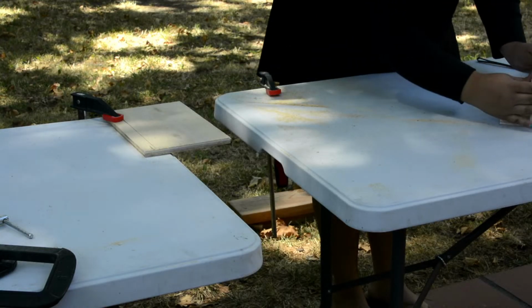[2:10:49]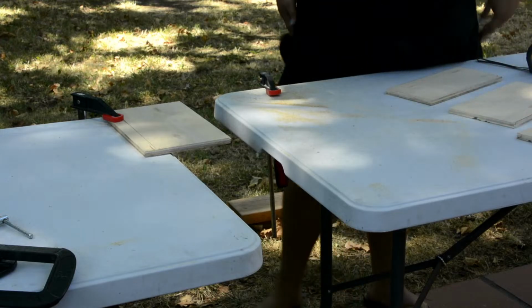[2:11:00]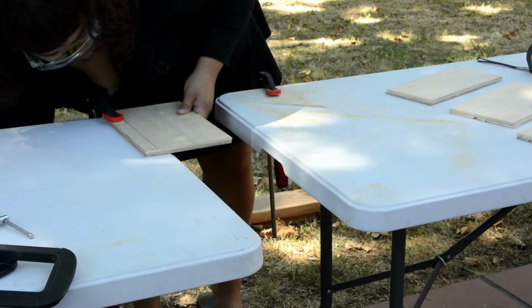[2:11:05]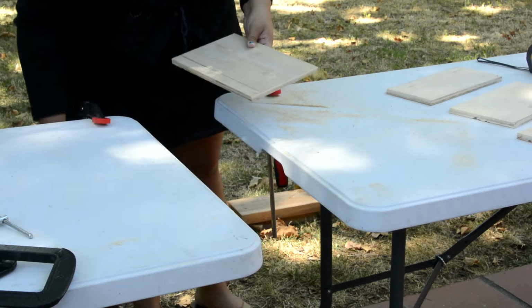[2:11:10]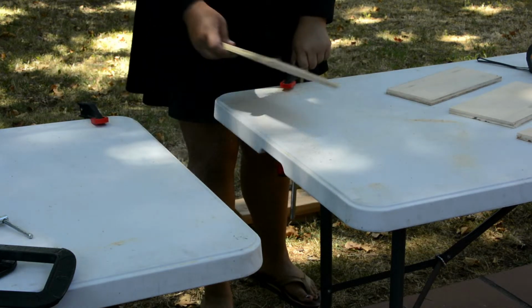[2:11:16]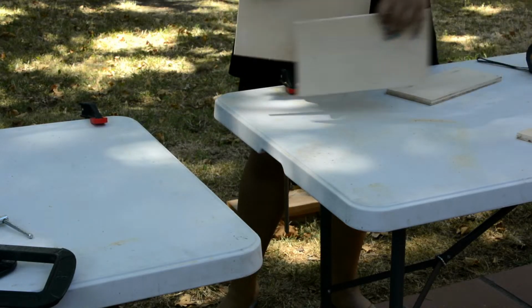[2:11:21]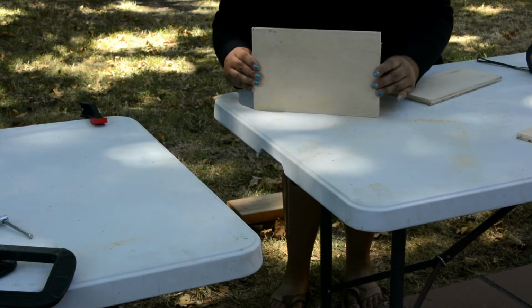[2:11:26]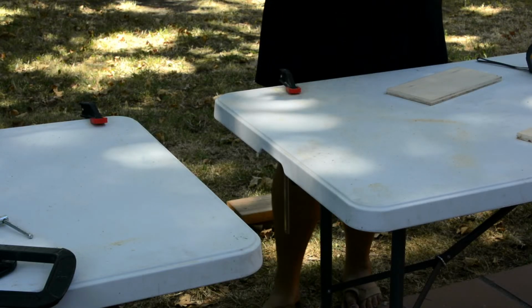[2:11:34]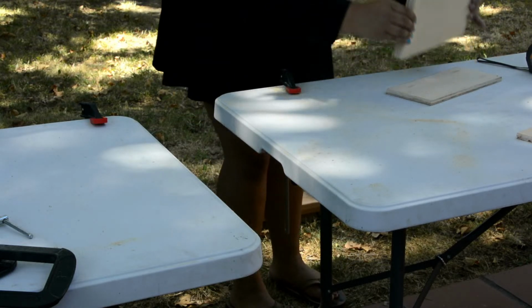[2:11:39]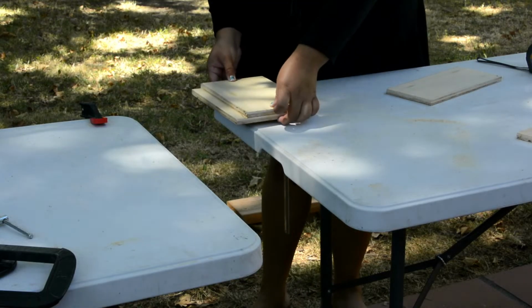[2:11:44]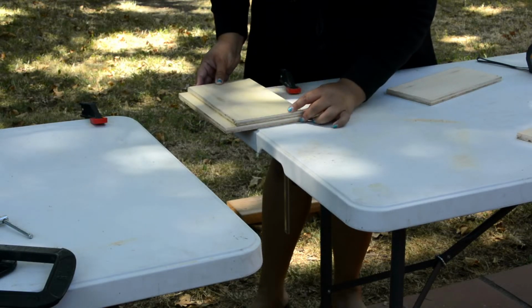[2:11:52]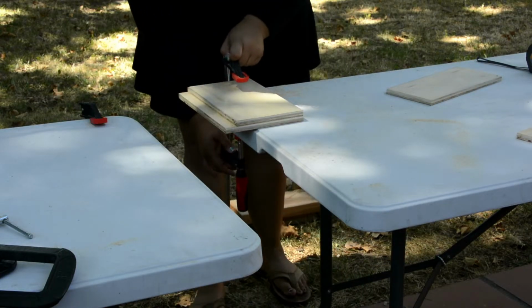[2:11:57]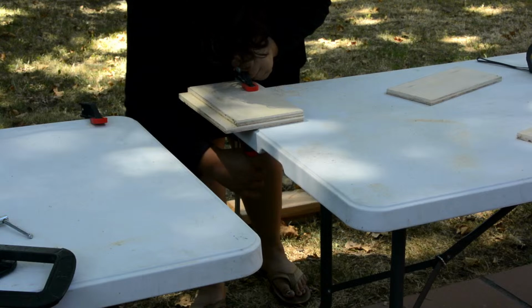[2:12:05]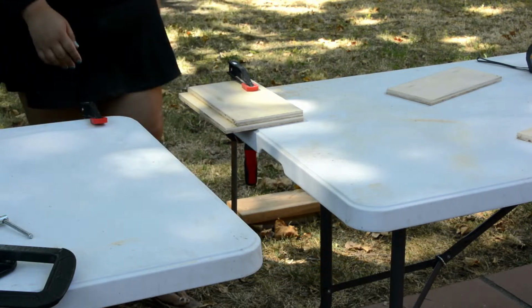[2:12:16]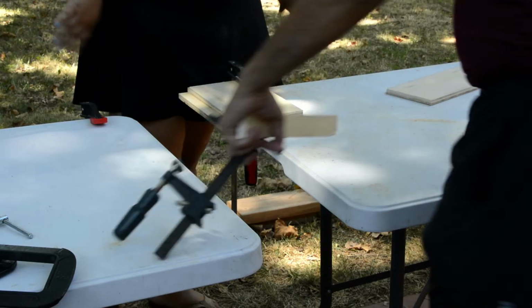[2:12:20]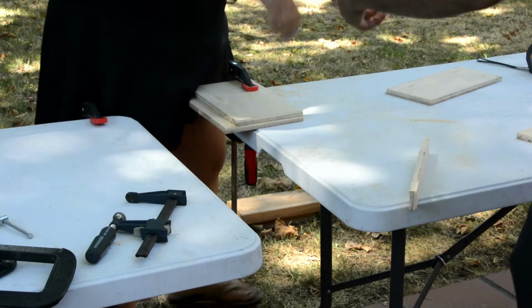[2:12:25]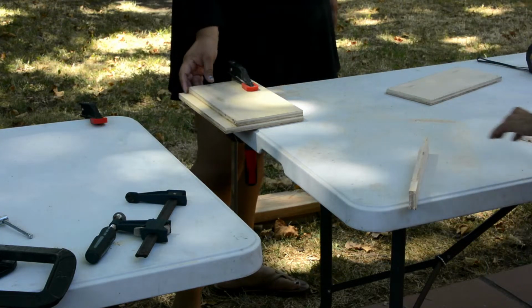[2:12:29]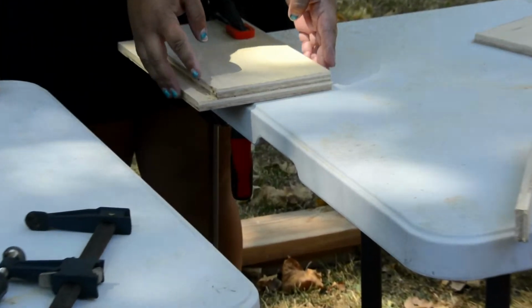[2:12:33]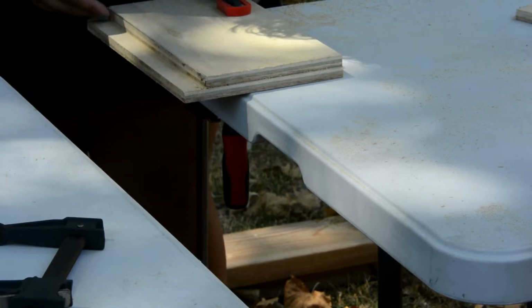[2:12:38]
I know. I was just coming to drop off another client for you. Well, it's for that. Oh, smart idea. Well, I just want to see if I can. That's really good. I'm gonna zoom in on that. I don't even want to be on camera. Well, now you're less on camera because it's more on the wood.
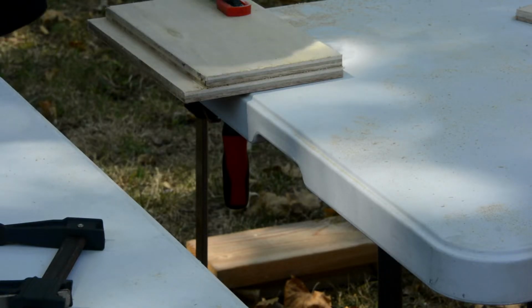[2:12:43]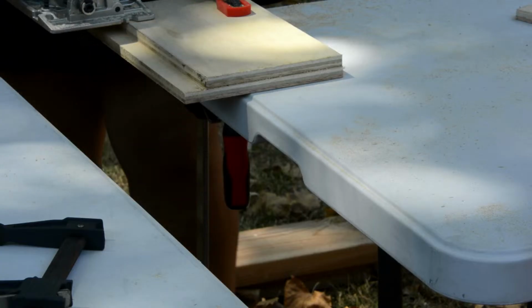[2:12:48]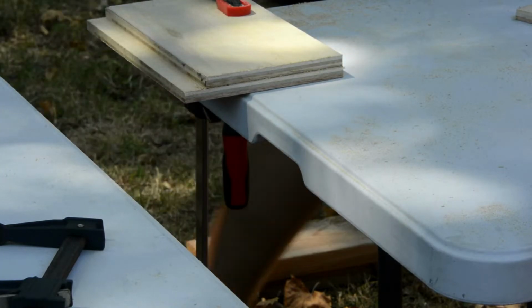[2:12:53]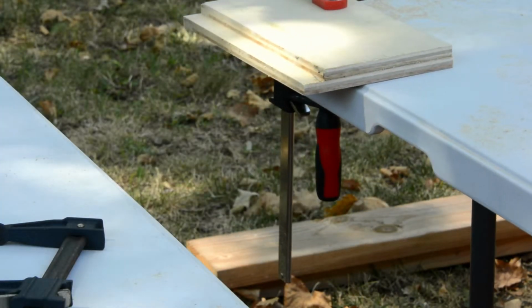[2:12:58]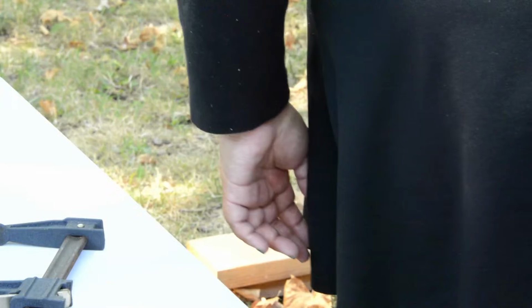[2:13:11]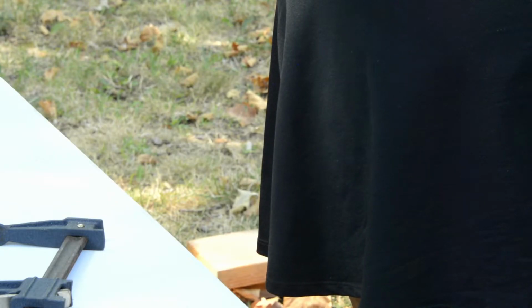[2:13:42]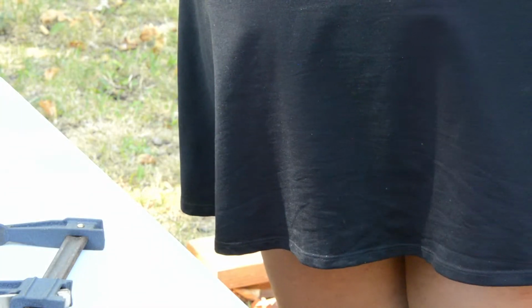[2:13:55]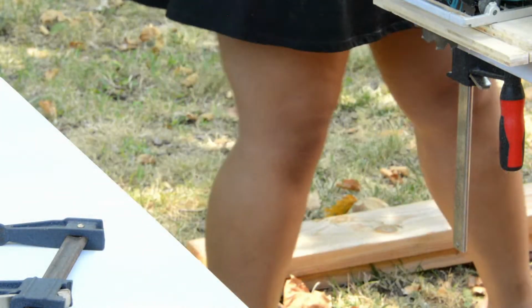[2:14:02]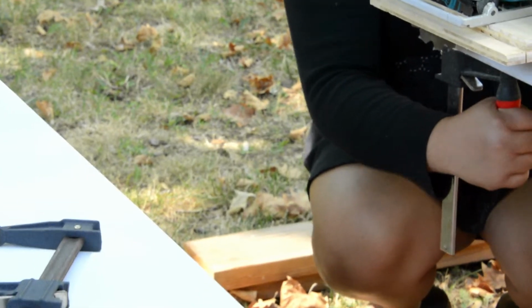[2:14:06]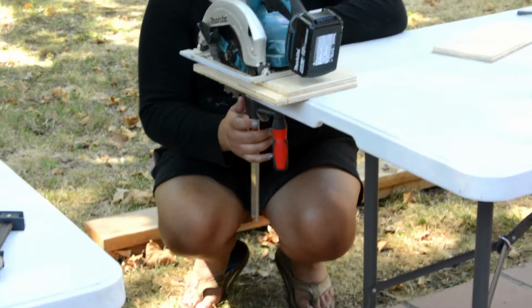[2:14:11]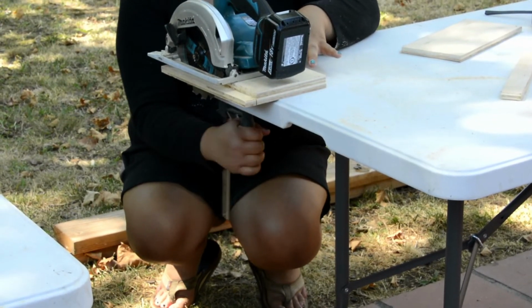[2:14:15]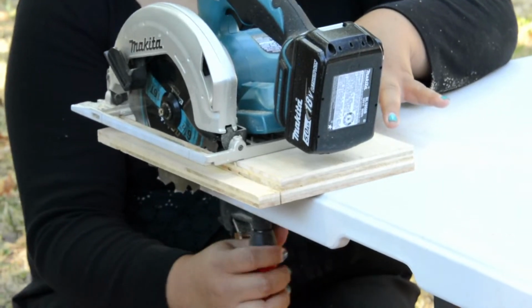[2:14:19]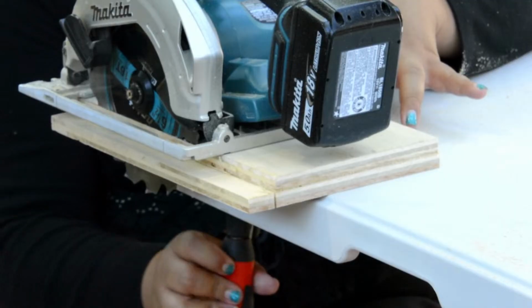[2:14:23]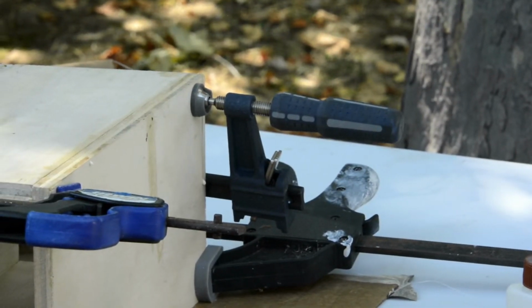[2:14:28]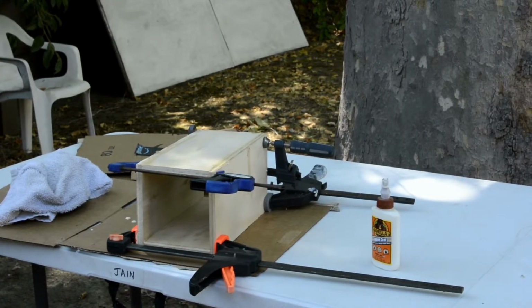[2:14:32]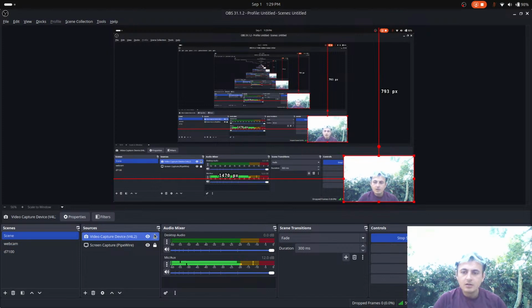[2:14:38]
Okay, I found them. Now I just need my calipers. Because I want to start everybody down with flashing. Okay. Well, you want me to just turn it away from you? All right. Okay, so we have the drill bits. Now I just need to check the CAD.
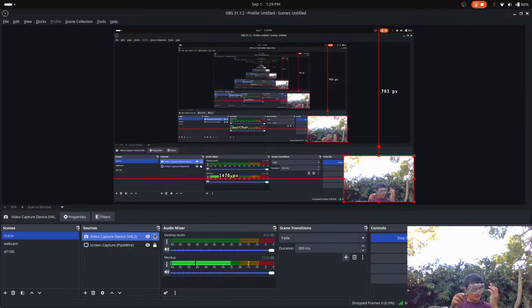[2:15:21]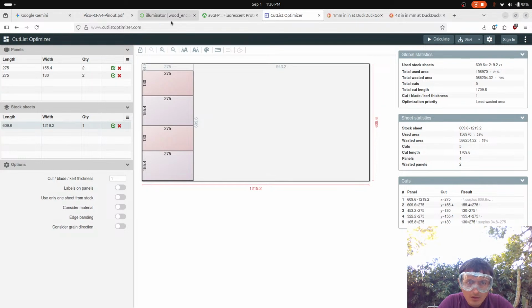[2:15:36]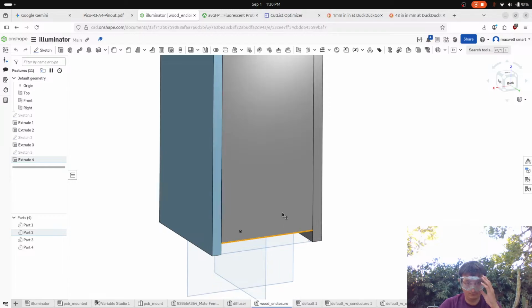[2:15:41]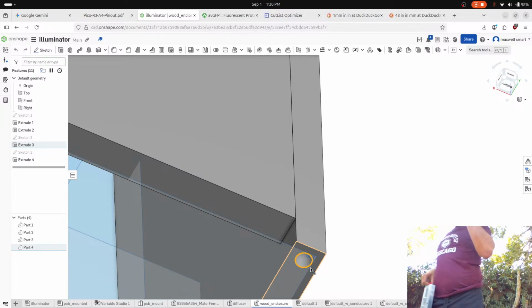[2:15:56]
Okay, sweet. So, what did I spec it for though? I think we're gonna just try to drill in here. 6.5. All right, I'm just gonna go do this thing, I think. Wow.
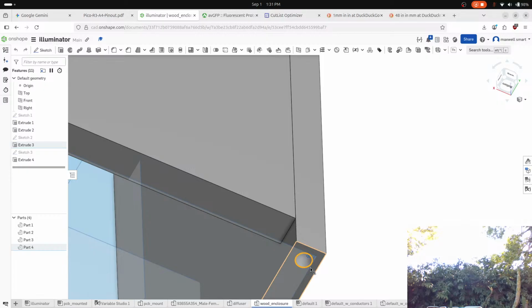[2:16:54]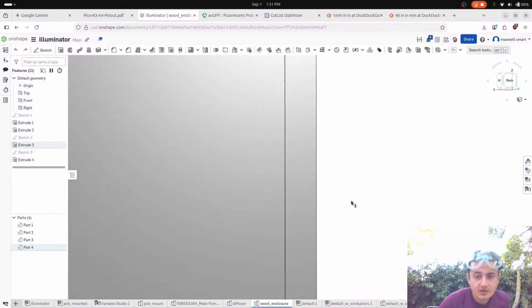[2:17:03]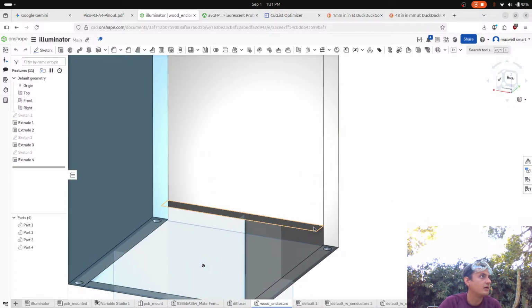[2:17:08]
One of the 130mm ones needs to be made short. I just realized I messed this one up. 15mm. Yeah. So like one of them needs to be 260 instead of 260. 130. No, but in this dimension. So one of the 130s needs to be right down. Okay, so this one needs to be lined to here, and this one... Just say the number. What is it? It is 60.
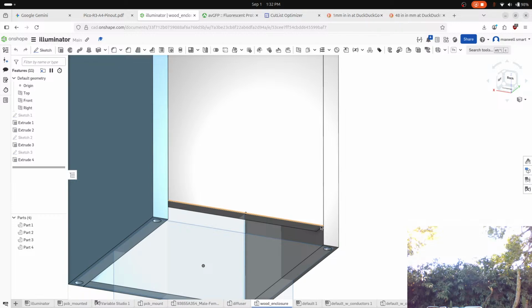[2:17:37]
I know, but all your numbers are bigger than 130. So what does this mean? Do you want me to put another one shorter? No, only put one. Yeah, this is the extra. Okay, that's what I'm saying. I should have said that after. Well, I just forgot. No, I know, but the way you said it right now, I had it all aligned.
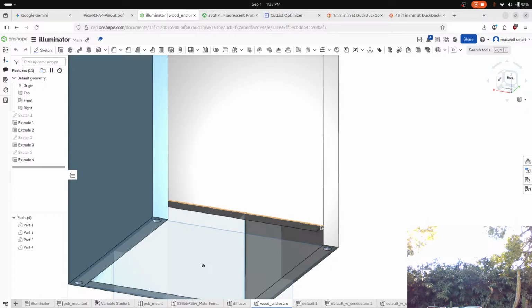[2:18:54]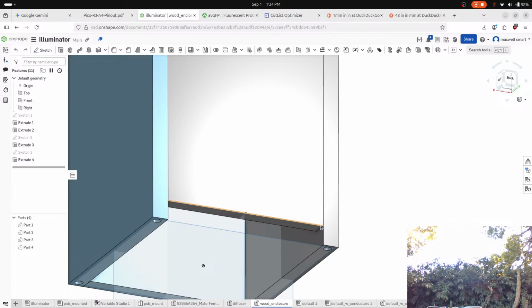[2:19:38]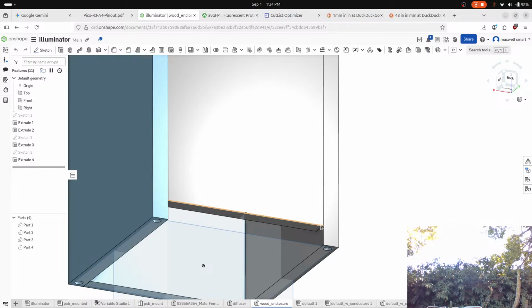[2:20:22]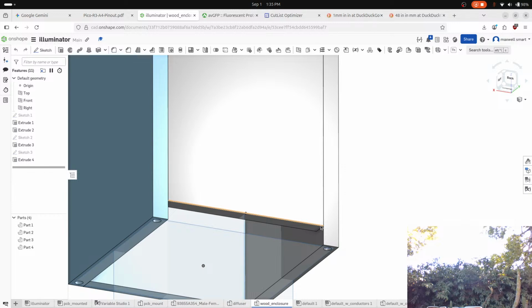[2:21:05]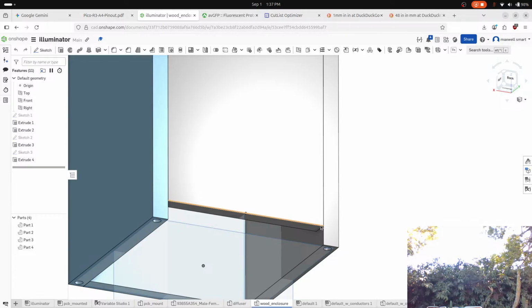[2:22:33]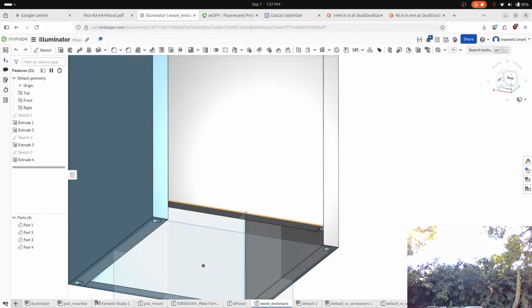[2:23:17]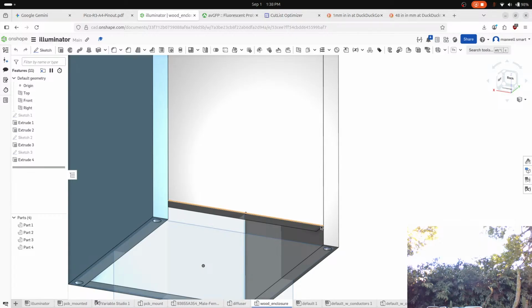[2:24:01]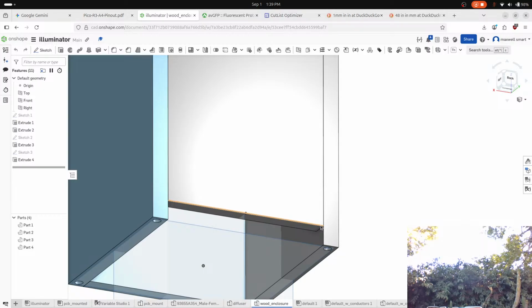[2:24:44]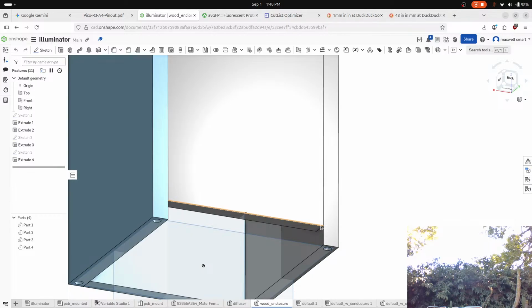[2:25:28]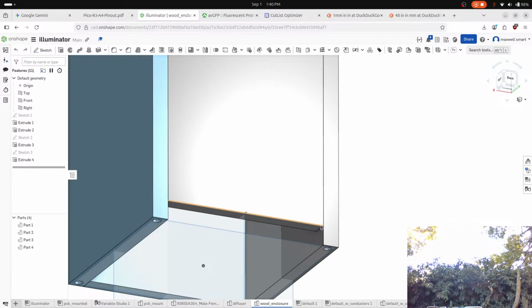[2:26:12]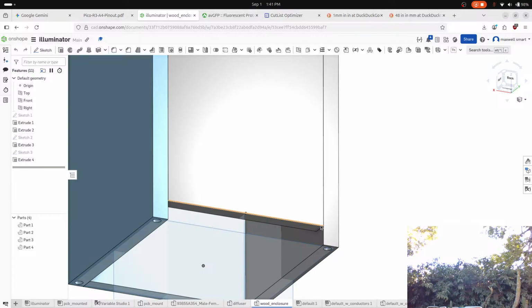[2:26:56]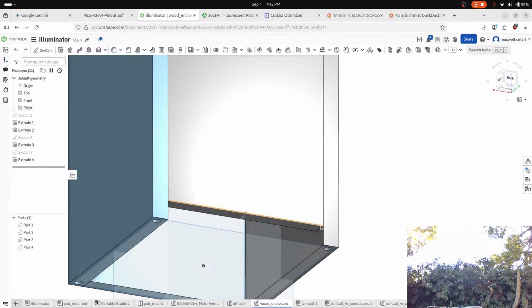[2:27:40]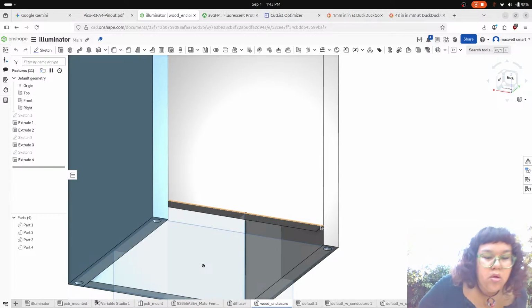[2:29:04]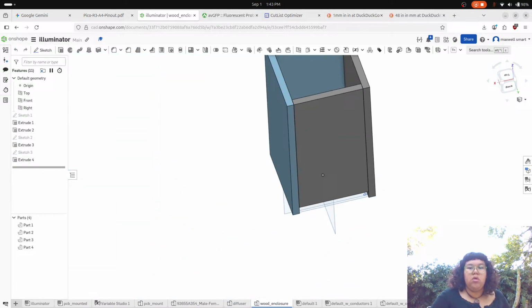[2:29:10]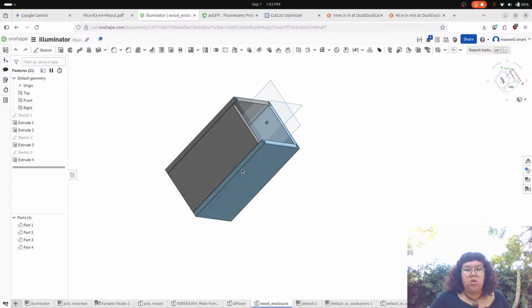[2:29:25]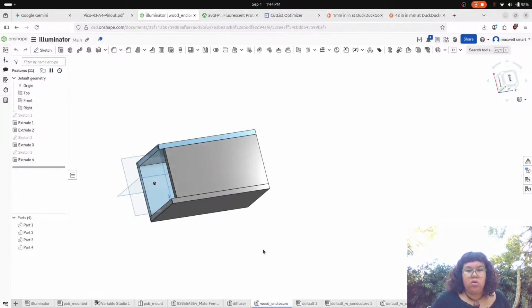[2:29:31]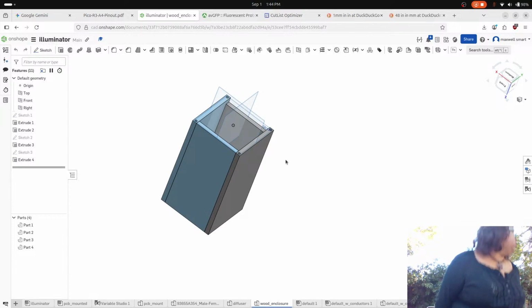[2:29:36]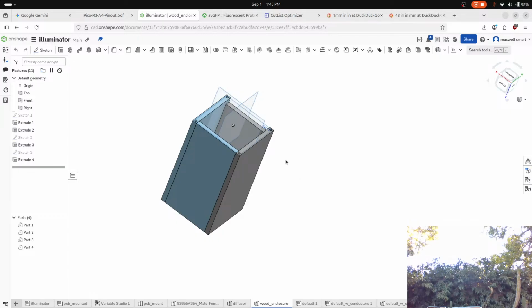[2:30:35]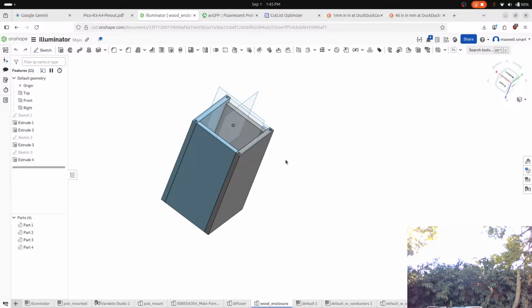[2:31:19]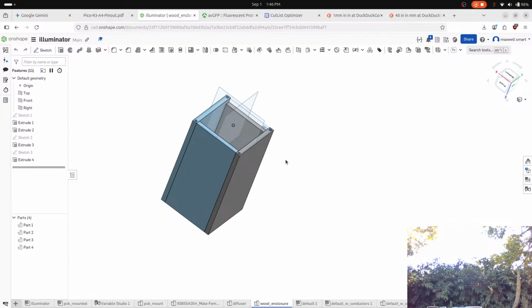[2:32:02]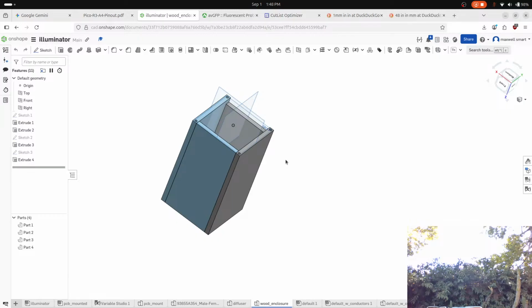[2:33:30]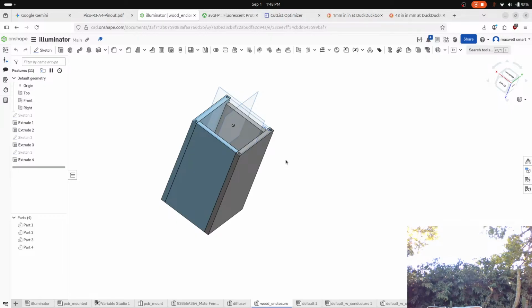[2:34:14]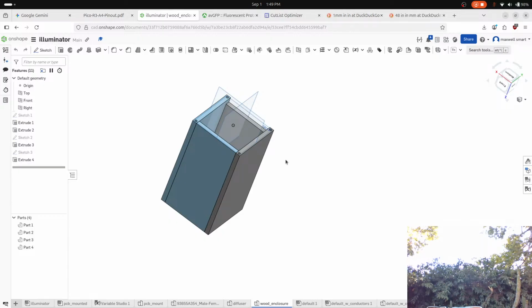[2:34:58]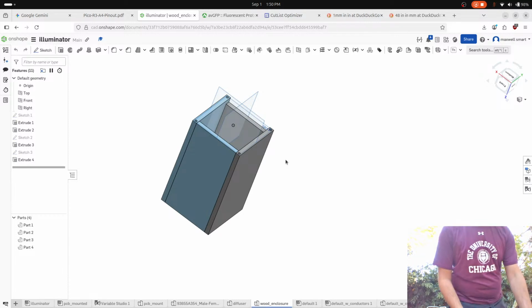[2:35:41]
It's peeling off of my skin. It's a little uncomfortable. All right. So we're doing the M6 by 10s. Oh, I need to get some bolts to check the size, because... Wait, we're doing the M... No, I think we're doing the M5.
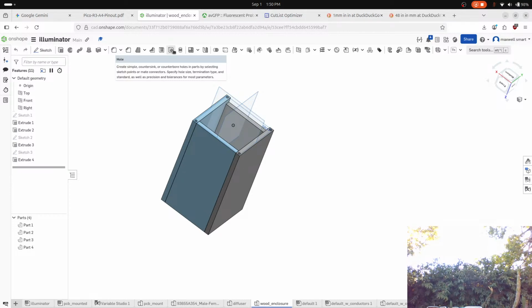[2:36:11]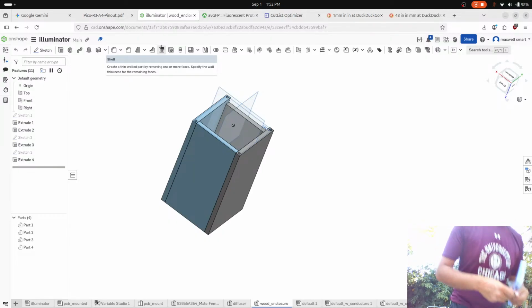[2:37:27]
Do you want me to help you hold anything? Yeah. Oh, wait. Yeah, I'm gonna get that one last plant from inside, but I was using tools. Because the more plants, the better.
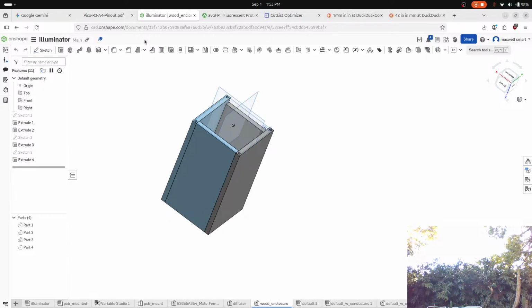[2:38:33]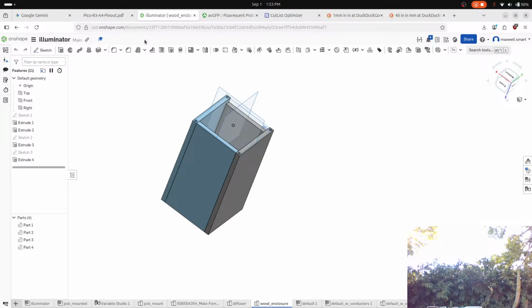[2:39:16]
Let's see it. Let's see the moment of truth. Let's see if it fits in, right? Small overhang, but I'm not sure. Oh, it's because of this. Oh! I thought you meant no. I thought you meant this way. This way.
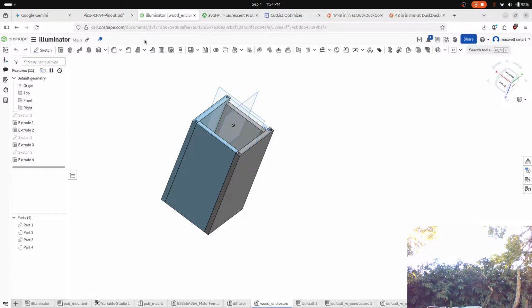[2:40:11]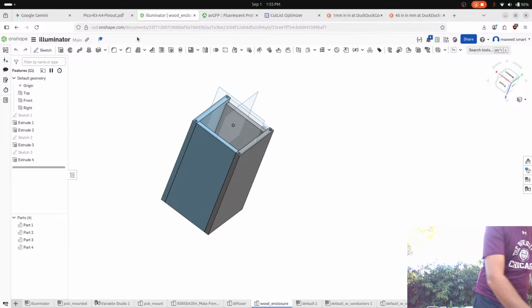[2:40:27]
So you have an M5. And this thing always confuses me. Like, is it this? Okay, it's this. So what we're gonna do is, supposedly... That actually worked pretty well. The only challenge is going to be how we... Oh, yeah, that's strong enough. That's not going anywhere. All right.
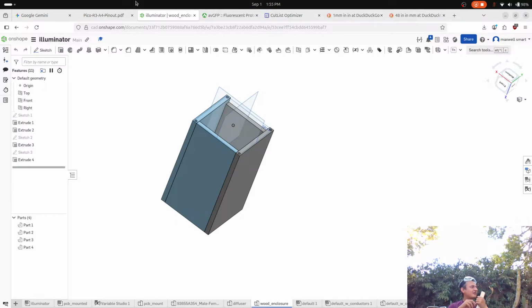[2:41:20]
Sarah, I was kind of worried, but this is really going to work. Look at it. It's in there. The only thing we need to figure out is whether we're going to do a second round of gluing and clamping with an additional piece like this on the bottom so that it's easy to drill into. Maybe I will do that.
Your box looks great. Yeah. You want to go get a banh mi? It might be closed today. You want the glue coming off your hands? Well, I did, and then it kind of ripped off some of my skin, and it kind of hurts. I remember when Zia and I were kids, we used to put Elmer's glue all over our hands and sit outside and wait for it to dry, and then we'd rub it all off. That's funny. I remember we used to have this glittery glue. We'd just walk around, it was a great feeling.
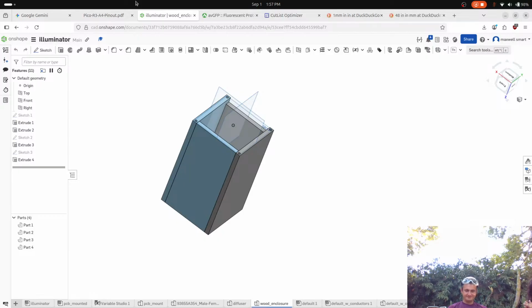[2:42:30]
Anyway, yeah, I'm pretty pleased with mine. You have a great attention to detail. You're not satisfied with subpar work, basically. Also, mine is like 5 millimeters taller than that. That's perfectly fine. But I just did 15 millimeters off the 280 because it's 280, not 275. So I took it down to 265 for the short one. That's perfect because this is gonna go on top, so it just needs to be relative to this. That's perfect that you did the 15 and not 20. Either way, it wouldn't be that big of a deal. I checked out your thingy first to see. Yeah. Anyway.
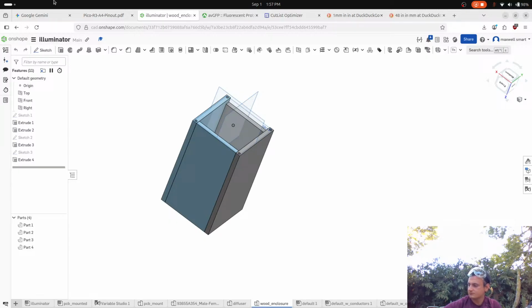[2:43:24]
Let's go eat some. You should get me an apron next time. Yeah, I didn't even think about that. I guess that was one DFM issue. It's gonna be annoying. Yeah, it'll be fine. I want Swedish pancake. You want to go to Holders? We should go to Holders. That's a good idea. We'll clean up and go to Holders. Yeah, can we do that? They're probably open. Yeah, they are.
It's open. My worry is I didn't make this deep enough, and I'm gonna have to reprint this. Why wouldn't it be deep enough? Well, I'll just have to do that thing that you did where you cut off the prongs of the DC power connector. Because the PCB sits on here, but then it juts out a little bit, so I'll just need to fix that. Yeah.
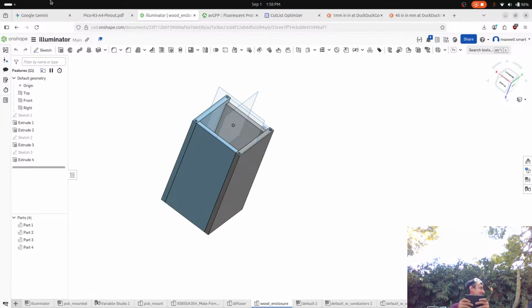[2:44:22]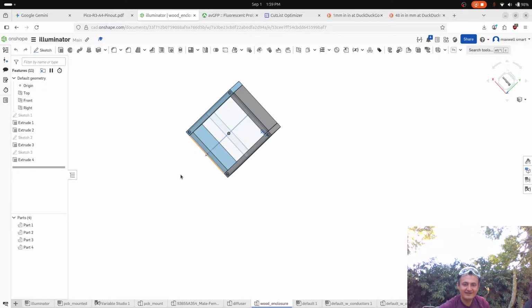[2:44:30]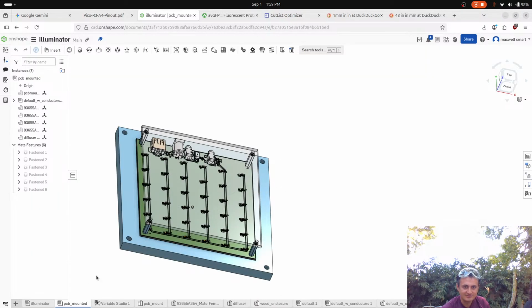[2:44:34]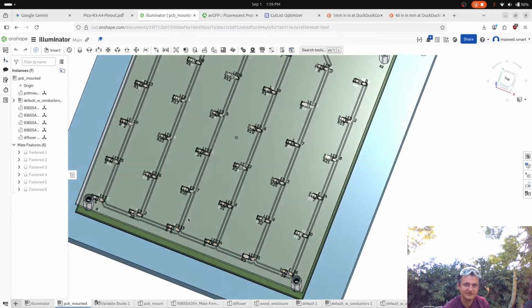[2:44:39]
Well, I got a big job for you. I got a lot. Well, you better feed me, so I'll do it. Feed me, I'm not doing it. Oh, I'll feed you. Feed you a bunch of stuff. You're gonna be my feeder. Yeah, you're my feedie.
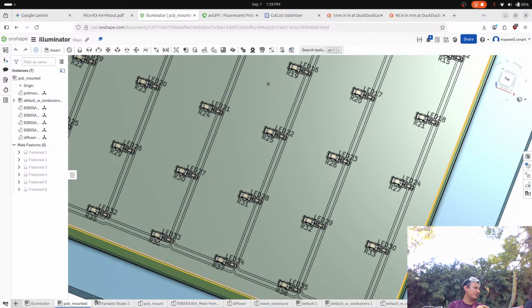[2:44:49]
But I do want to know, what do you think? Do you think it's possible for us to drill? Because I don't want to just ruin that box. That's why I feel like we might want to just cut off some slivers of this, and then, well, oh shit. What? The window will be too big if we add slivers. I don't want to add slivers. Well, that's what I was asking. Okay. So you want to drill? Can we just practice on yours first? Yeah, we are gonna practice on it, obviously. But it's good that we did two anyway, that way we could do the practice run.
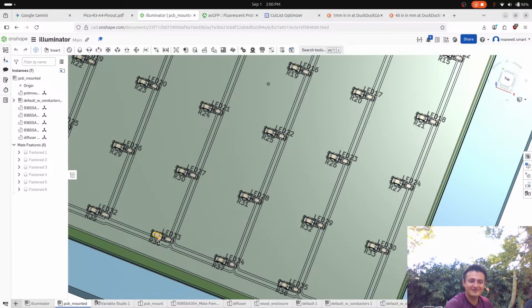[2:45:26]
Yeah. Your fucking hair. What's wrong with my hair? Anyways, it looks funny. You need to see it in the mirror. It looks like you're one of those Mexican guys that do it purposely, where it sticks up with the gel.
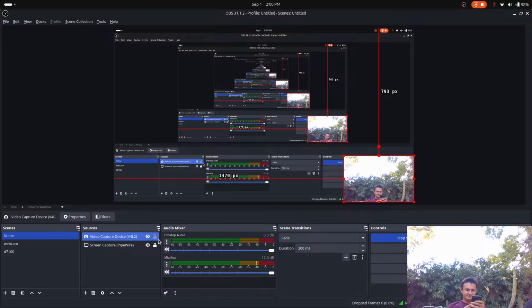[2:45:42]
Anyway, this looks nice. How did you get this in? I used the drill press. And then for the insert, the insert has a hex key in it. So you just push it in, and then you start to screw it in.
Oh, okay. Should we have done that on here before we did it? Oh, probably. I mean, we still can, if we just mark the spots exactly. The reason is that what I wanted to do is put this on the back, draw the holes where they needed to go, and then I think personally we could hand drill it.
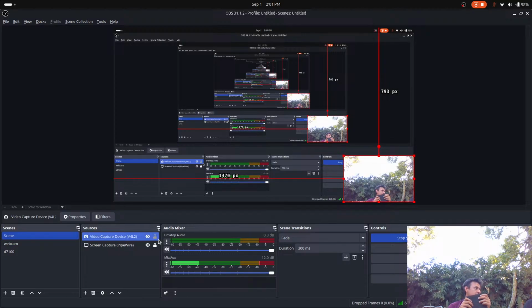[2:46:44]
Do we have a staple gun? Yeah. Can you just staple gun it? It's just plywood. Add a bunch of staples to the sides of the seams of each. But this is gonna go on the bottom. How are you gonna staple this to that? Well, we could drill it, but I'm just saying to prevent more tearing. Can we not just staple the seams together? So it's more seamless. I feel like it would hold together just fine. You're saying these types of seams, like this? You staple it here? Yeah.
Were you not thinking of reinforcing that again? No, wood glue is super strong. Wood glue is strong, but I just feel like you're gonna put a good amount of weight on it, right? I don't know. I would advise you to, instead of staples, I'll just screw it. It's gonna split. Yeah, that's what I was saying.
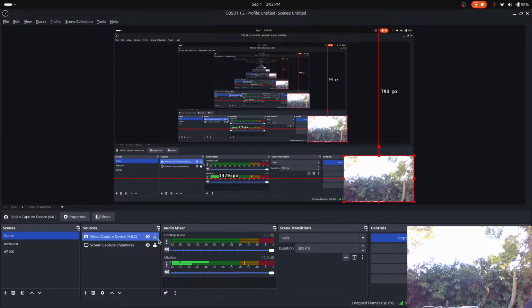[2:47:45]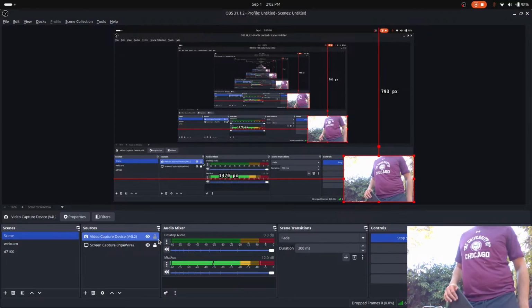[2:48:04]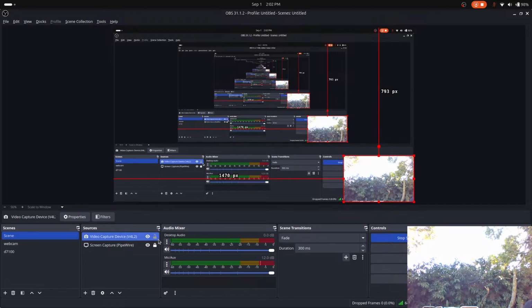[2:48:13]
I would staple it. I would screw it. Sounds good. Yeah, I'm down with that. That's a good plan, I guess. The only thing that I don't like about staples is they're not very pretty. I think they're pretty nice, especially if you get them right. Really? Okay, I'm gonna trust you. All right, that sounds like a plan.
I do want to look up how strong wood glue is, because I feel like I watched a woodworking video and some guy said you don't even need screws because wood glue is so strong. Wood glue is strong, but plywood I feel is so weak, and it has several layers to it, and it could just peel off. Too much weight on the outer part is gonna cause it to peel off. It'll just delaminate the glue. No, I think it'll just hold on to whatever layer of wood it's on. Yeah, but one of the layers will split. All the layers will split, and one of the layers will stay. Right. If you put too much force on the top, it's better just to reinforce it.
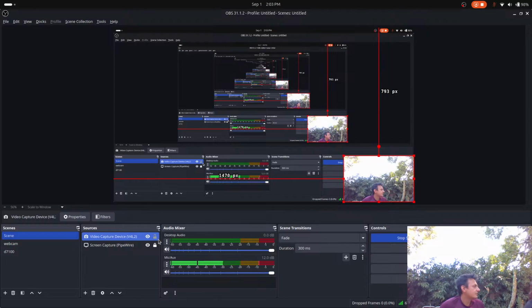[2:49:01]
Well, if it's that big of a deal to you, then we will. What I'm gonna do is, this is our test box, right? So we're just gonna do a bunch of tests. We're gonna test it with the extra slivers, and with the screws and the staples. Then we have a good idea of what works and what doesn't, because woodworking is totally foreign to me. It's a totally different thing. Okay, I'm gonna clean up here, and then we'll go get some food. All right. Okay, thanks.
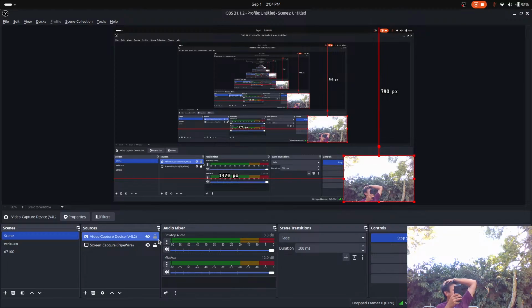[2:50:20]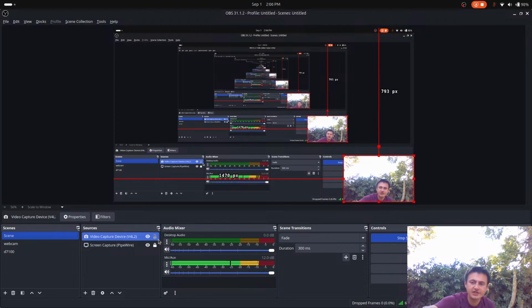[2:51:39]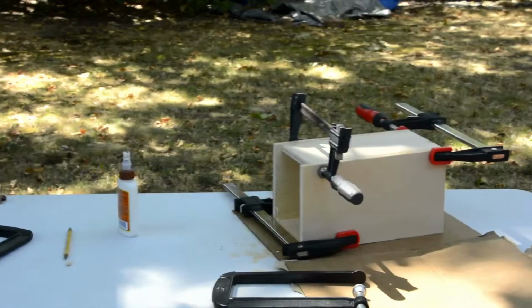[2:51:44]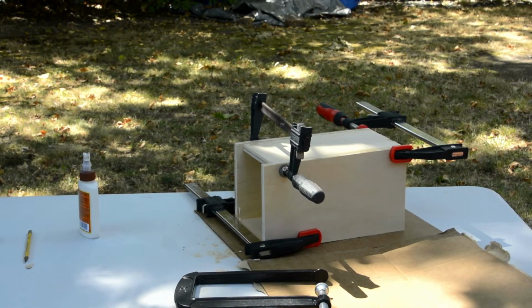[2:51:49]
Okay, so let me just get a last shot. So that's my box, and this is Sarah's box. Hers is much nicer, and it has the window.
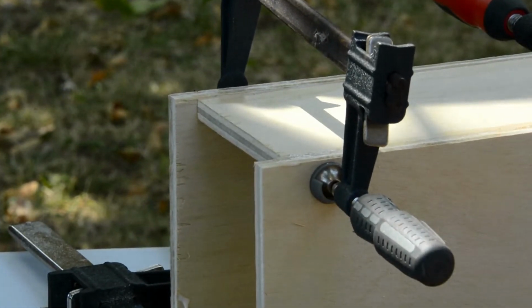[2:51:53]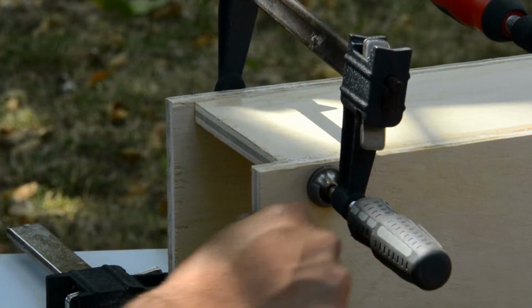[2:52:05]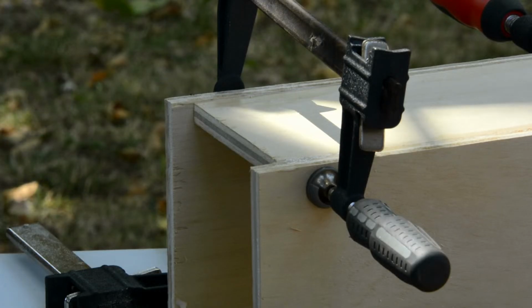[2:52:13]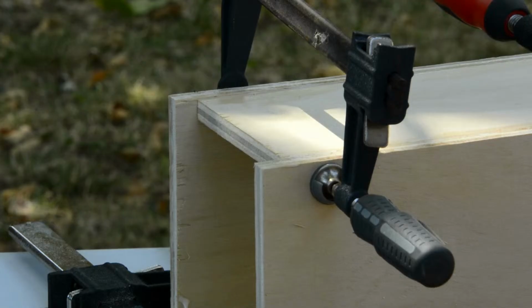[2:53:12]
You know what this makes me realize is that there are projects where the execution of assembly is a bigger burden than other things. What I'm talking about is the depth of the assembly graph. Sometimes the assembly really doesn't have a large dependency tree. But in this case, the order matters. I think my problem with woodworking is that it requires a lot of finesse.